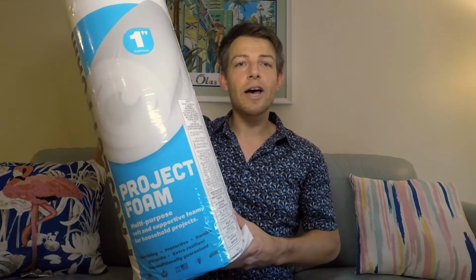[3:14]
I'm making a video today to tell you about an awesome project a group of us have been working on the past week or so in an effort to increase the personal protective equipment supply here in Broward County and South Florida. You may have heard on the news or seen on Facebook undoubtedly that there's a personal protective equipment shortage all across the nation and that masks and respirators are in high demand.
Well, in an effort to reduce the amount of respirators and masks that are being utilized, we've developed a do-it-yourself face shield. To tell you how this idea came to fruition, a friend named Amy, who is a medical student at George Washington University in Washington, D.C., has been doing this in response to D.C. and New York City's COVID fight. So thank you, Amy Tronier, for helping us get this project off the ground by providing us the instructions and the tips on how to improve assembly of these. We really appreciate your help.
I'd like to take a moment to express our gratitude to all of the donors and supporters from our GoFundMe page. You made a huge difference in making this project possible. And not only that, we're going to be able to get these products to the front lines to address the response when it's at its peak. Because of you, we were able to hit our $1,000 goal in just under 2 days, which is incredible, and we were overwhelmed with the support. Since then, we've sent out 8 do-it-yourself mask making kits. So we'll be able to be making these face shields from home starting this week. So it's very incredible. And so thank you to all of our donors and supporters out there.
After reaching out to various health organizations in Broward County, we identified this as a potential solution and a need for South Florida's COVID response. We'll be donating these to Broward Health Systems as well as the Broward Medical Response Unit. They serve as a repository for all personal protective equipment, and they distribute them to the first responders, hospitals and clinics, and nursing homes, anyone who has a bona fide need for this product. And it helps optimize the use to get them in the hands of who needs it the most.
These face shields are beneficial to users in that it allows them to see while giving them eye protection, as well as covering their respirator or mask that they're wearing, preventing contamination from COVID. This in turn increases the lifespan of that respirator or mask, which is in short supply. So it's really a win-win for the user and the personal protective equipment shortage.
You may be wondering to yourself, Sam, that face shield isn't going to last very long. Well, as an engineer, it's not designed to. It's designed to get involved in a time like this where you don't have access to more hardy pieces of equipment to protect yourself, but you do need something. So this does get the job done in that sort of situation.
And now the moment you probably all have been waiting for, I'm going to tell you a little bit about our DIY process on how to make these face shields using some foam, staples, laminated sheets, where you can turn all of that into one of our face shields. The first thing that you need is some foam. This can be purchased at Amazon, Joann's, Michael's, and it's 1 inch thick. So what this will serve as a cushion across the front of the face shield and provide a little bit of separation from the forehead of the wearer to their PPE they're wearing underneath.
The next item you're going to need to construct these is a plier stapler as well as the appropriate staples. Make sure they match. This will be helpful in securing the foam to the transparency film. The next item you'll need is 1 inch Coban tape. This will serve as the head strap for the face shield.
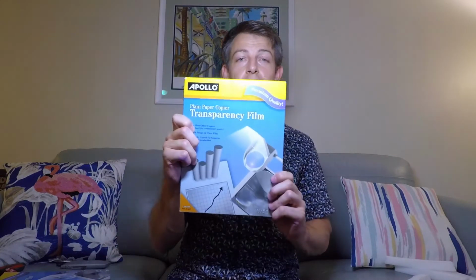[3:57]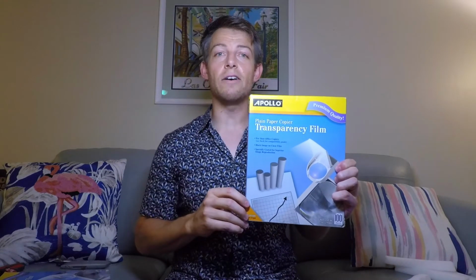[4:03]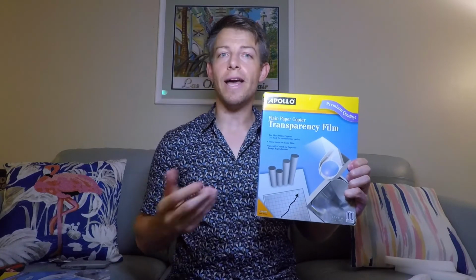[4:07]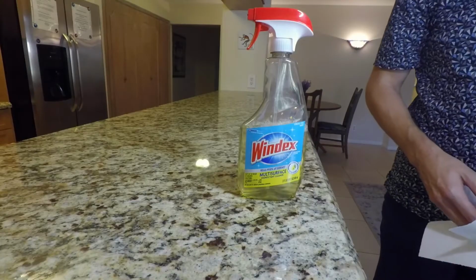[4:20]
Now, if you remember way back to your elementary school years, you may remember these transparency films. This is what your teacher used to write on with the overhead. This is going to serve as the face shield itself to protect the user. It's 8.5 by 11. You can buy it at Staples, Walmart, Office Depot. Pretty much any office supply store should have these. You can get the black and white or the color printing. We found the black and white to be the cheapest.
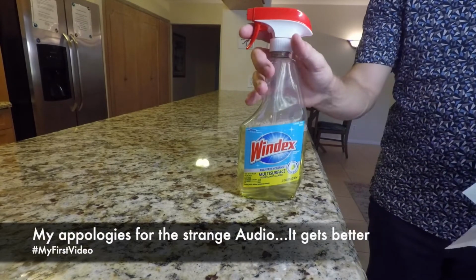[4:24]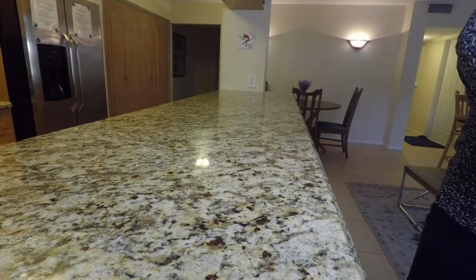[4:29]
So prior to starting measuring out the foam, we ask that you spray down your work area. That way you can reduce the contamination of this PPE.
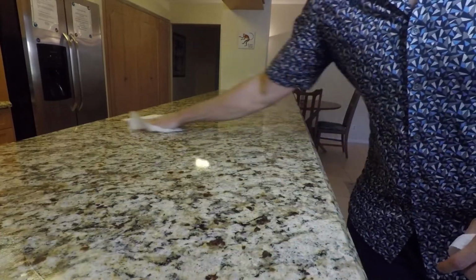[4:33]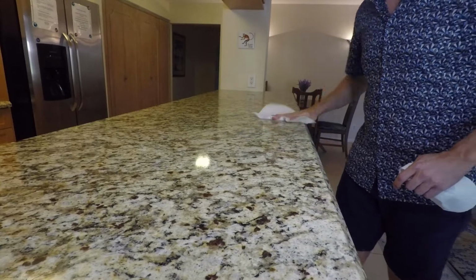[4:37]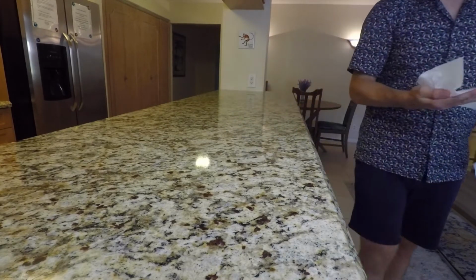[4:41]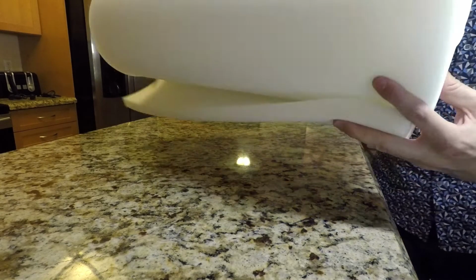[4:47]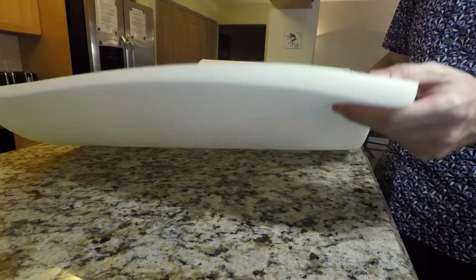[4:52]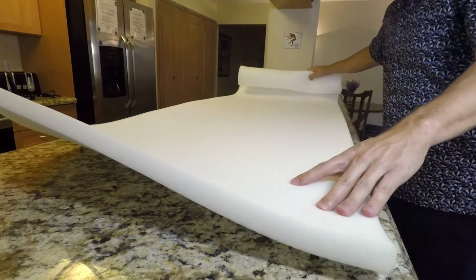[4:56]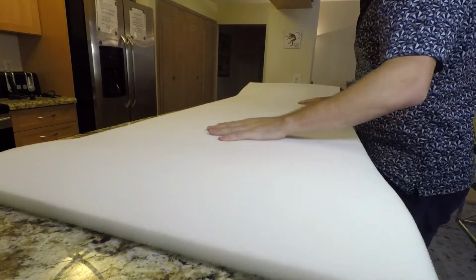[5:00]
Next, take out your foam and lay it out where you're free to measure it. Once again, this is a 1 inch thick by 24 inch wide by 72 inch long roll of foam. You may have to flip it so that way it doesn't roll up on you.
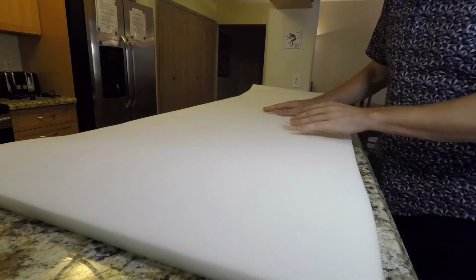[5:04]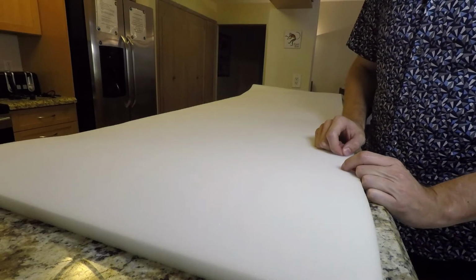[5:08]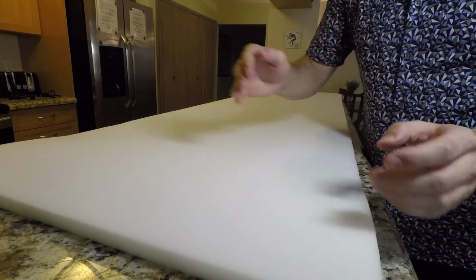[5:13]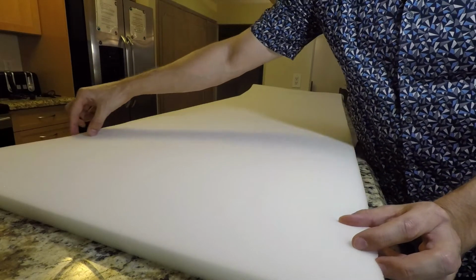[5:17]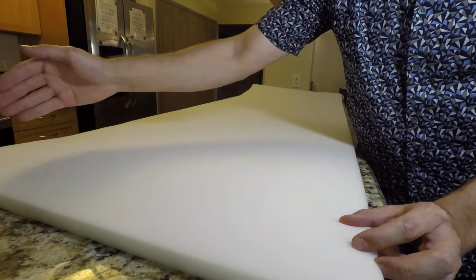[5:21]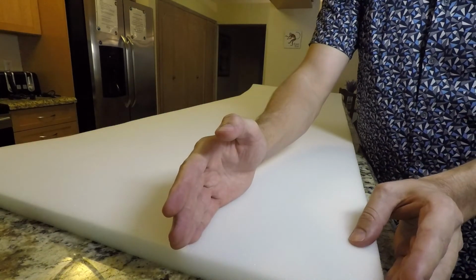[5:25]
Now it's important when you're cutting this that you always measure twice before you make one cut. So we've done a little bit of math and we found that with the 24-inch width, if you make your first line going all the way down about 1¼ inch, that way you'll have 3 different 7.5-inch.
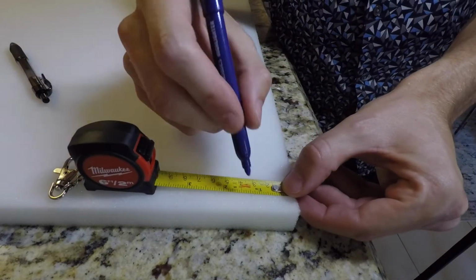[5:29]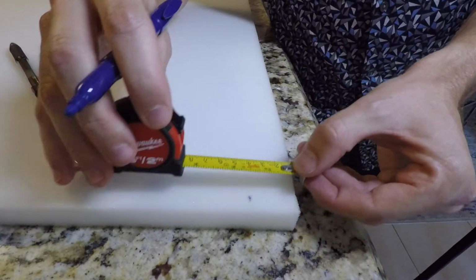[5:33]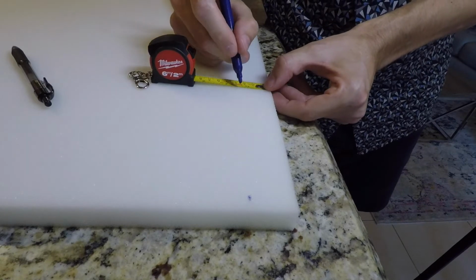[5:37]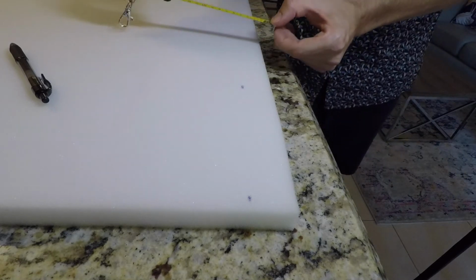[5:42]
So here we are at the edge and we're gonna measure 1¼ inches with a marker. And we're gonna do this a few times because this is gonna be the first cut that we make in order to make sure we're using this foam to the maximum effect. So once again, 1¼ inches, just a few times down.
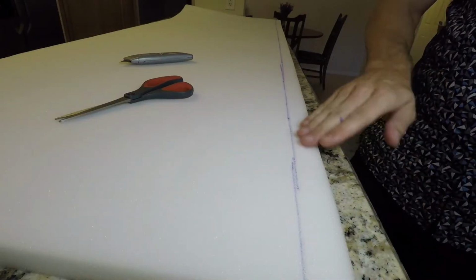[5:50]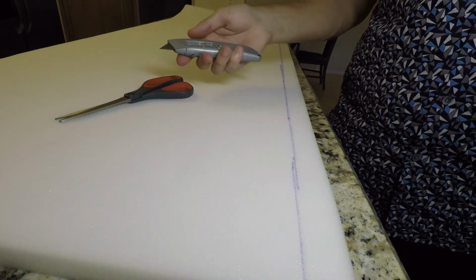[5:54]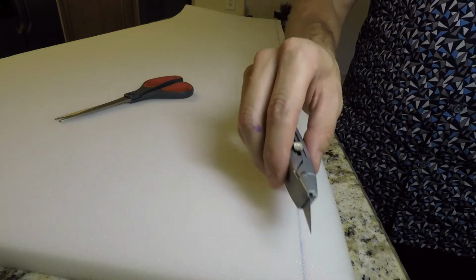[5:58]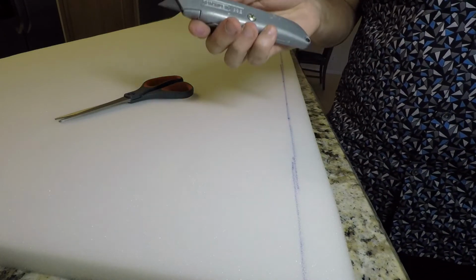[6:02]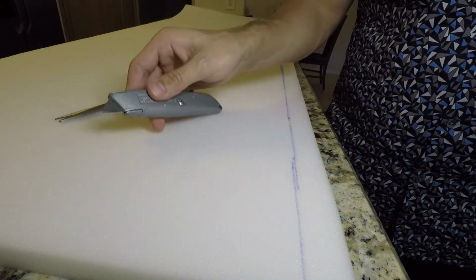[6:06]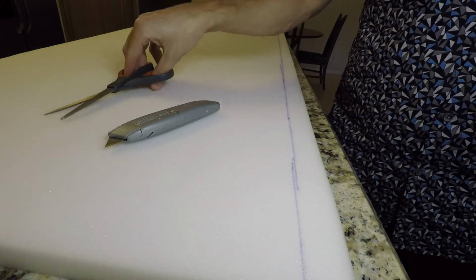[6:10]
Now that you've made the line going down this end of the foam, it's time to make your first cut. Using a box cutter or X-Acto blade, you can go down, make sure you're doing it on a hard surface. Do not do it on your grandmother's heirloom furniture. Your mother will thank me later for that. Or you can use scissors. It's a little more labor intensive, but it gets the job done nonetheless.
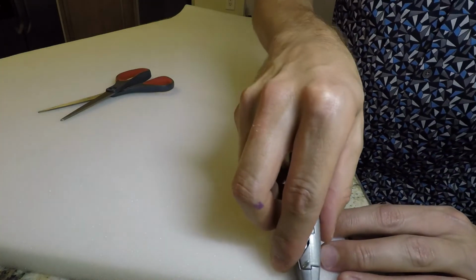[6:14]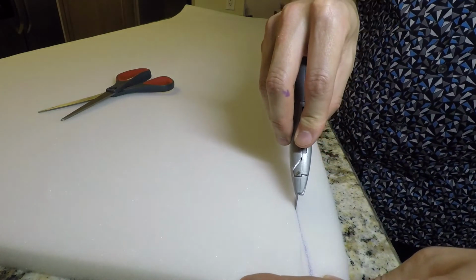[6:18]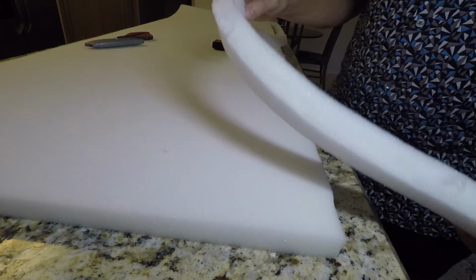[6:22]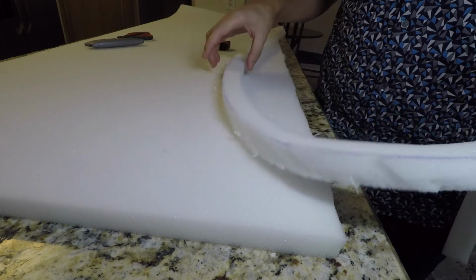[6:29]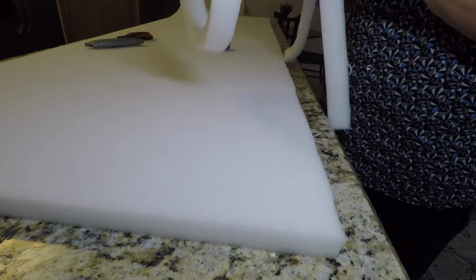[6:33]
Now that you've finished your cut, you've probably noticed there's a little bit of not as pretty lines, but that's okay. As we used to say in the military, it's going to be good enough for government. We're just stapling these to make the face shield. Don't throw this away. This is worth at least 10 face shields, so we don't want to get rid of it.
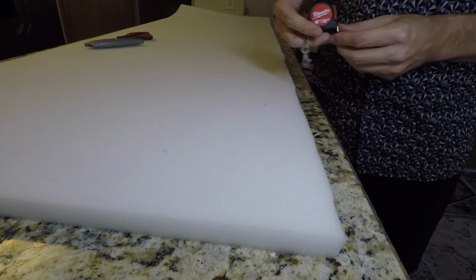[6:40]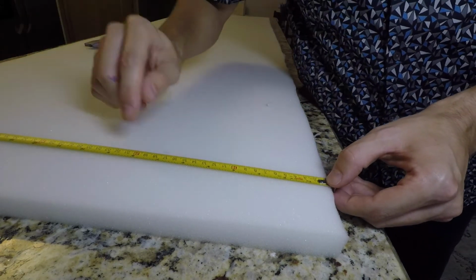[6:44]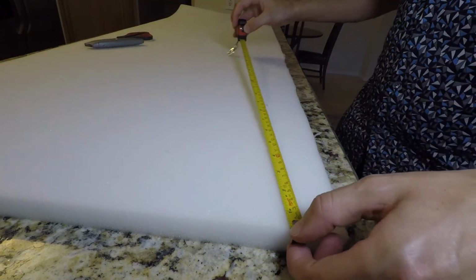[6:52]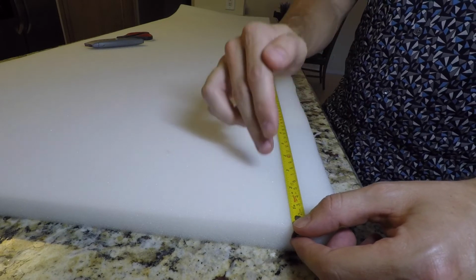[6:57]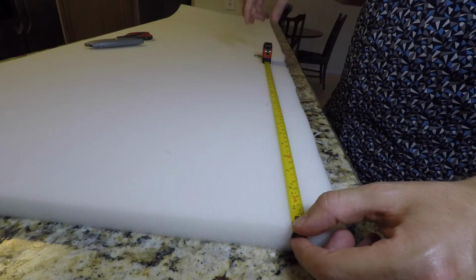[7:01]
The next step, we're going to measure across at 7 3/4, and this will make 3 equal parts of the remaining foam. After we've marked these, we're then going to go down the foam at 1 inch. At every inch, make a line. So this is going to be like a giant checkerboard, and then it'll be a little labor intensive.
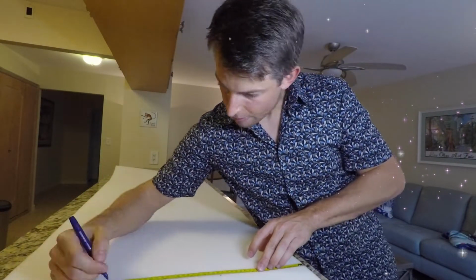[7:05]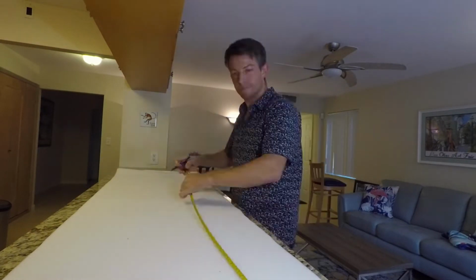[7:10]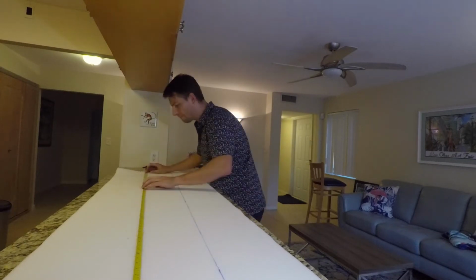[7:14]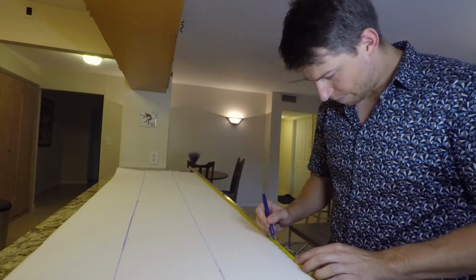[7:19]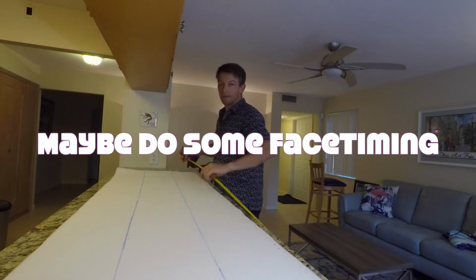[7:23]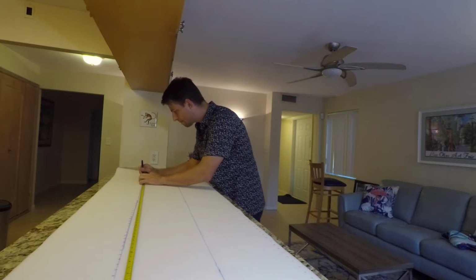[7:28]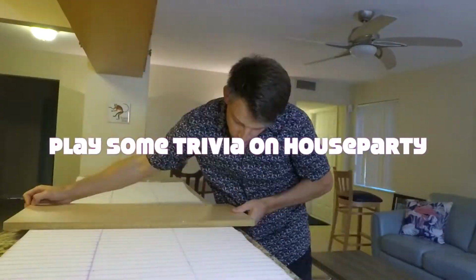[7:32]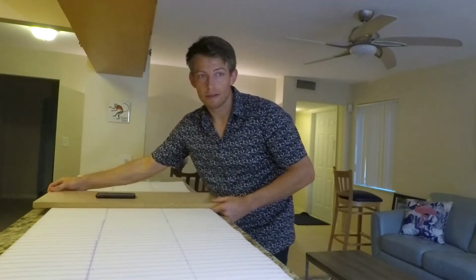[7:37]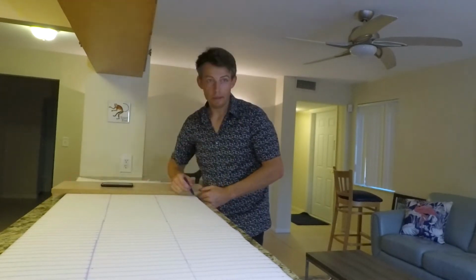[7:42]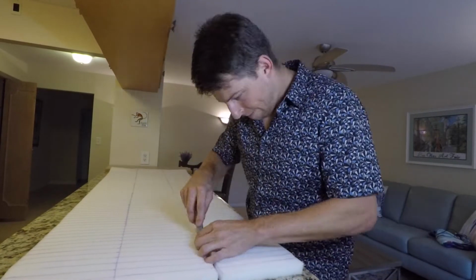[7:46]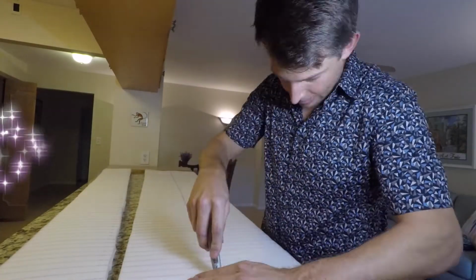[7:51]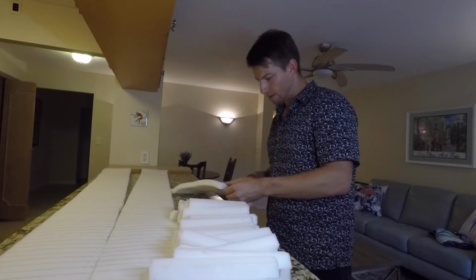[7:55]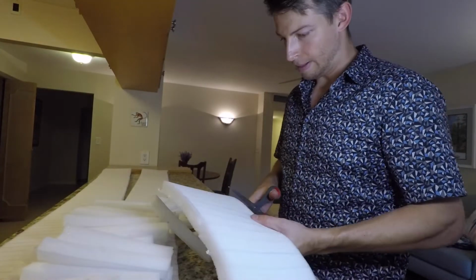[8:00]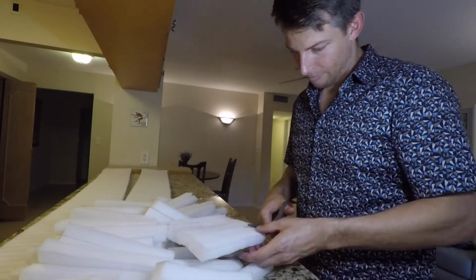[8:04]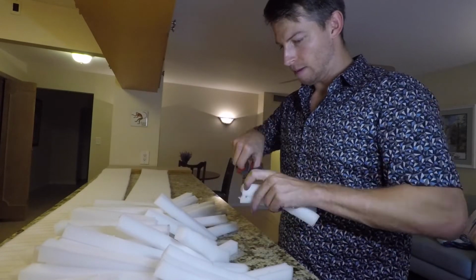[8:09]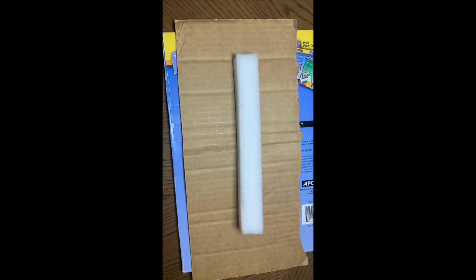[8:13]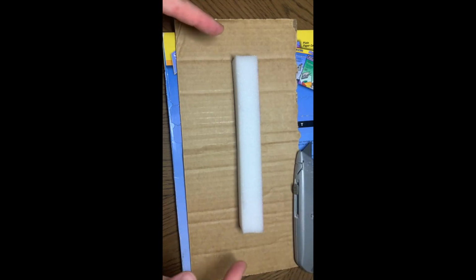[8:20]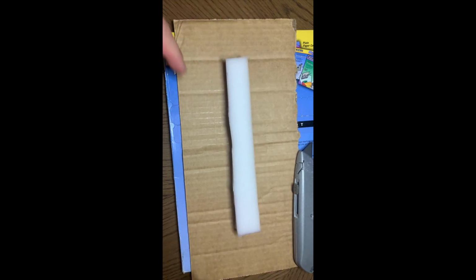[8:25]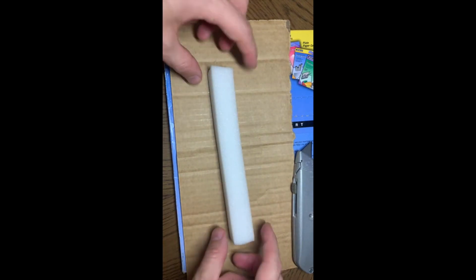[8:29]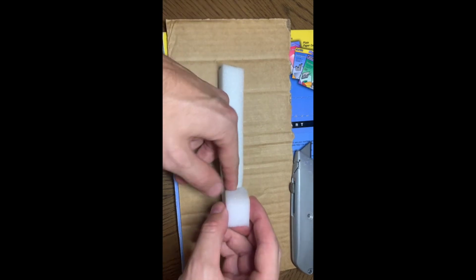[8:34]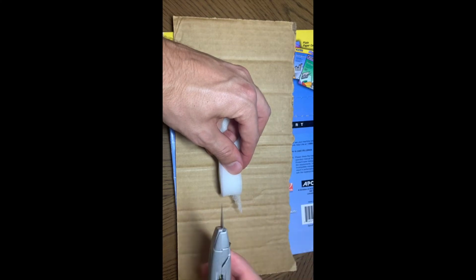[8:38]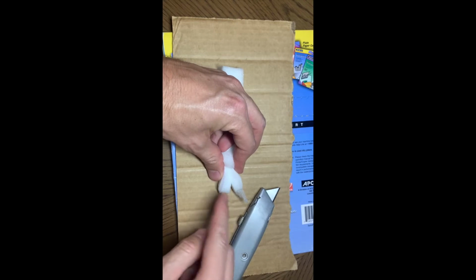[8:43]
All right, for the next step, we are going to be using the X-Acto blade to make 2 incisions on each piece of foam, about 1.5 inches in on each side. So if you look, you have your squiggly edge from where you cut and the factory edge. So with the factory edge going up and down on each side, fold about 1 inch in and take the X-Acto blade and push down and make a cut about midway through and all the way through the foam.
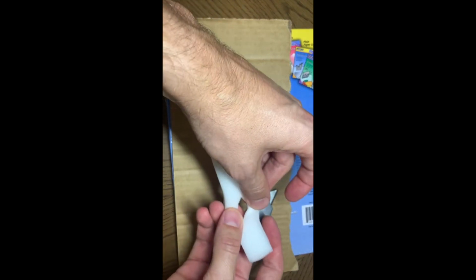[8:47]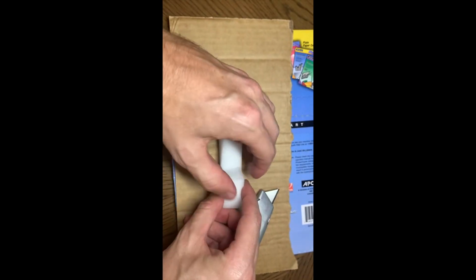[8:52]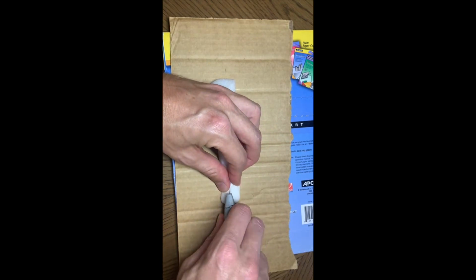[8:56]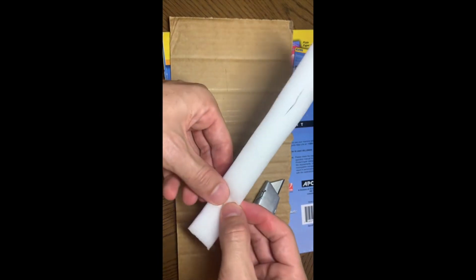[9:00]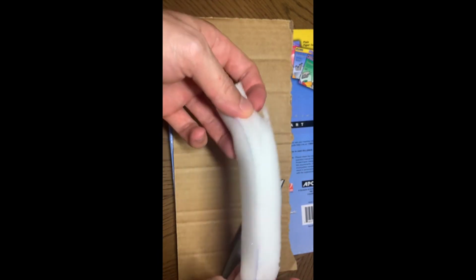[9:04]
This will allow the plier stapler to go through to attach to the transparent film. Flip over and repeat the same step on the side. Once again, do not use this on your grandmother's heirloom table. So now you can see you have 2 slits on each side midway through the foam.
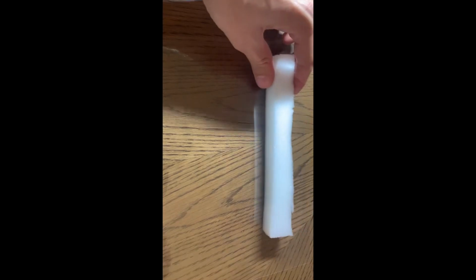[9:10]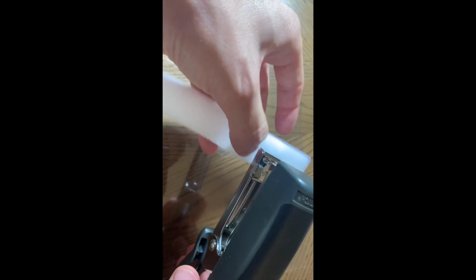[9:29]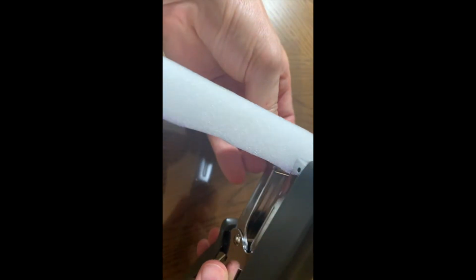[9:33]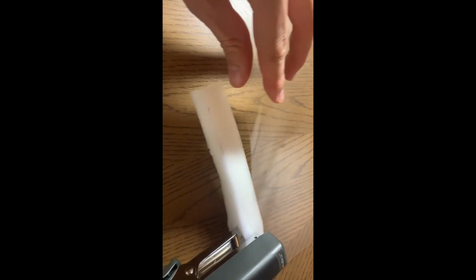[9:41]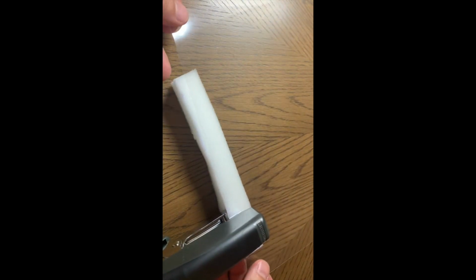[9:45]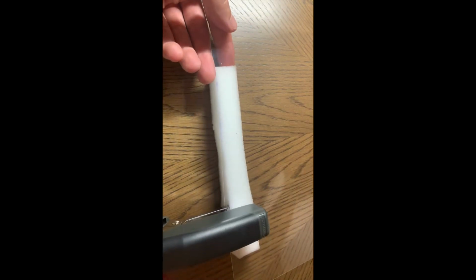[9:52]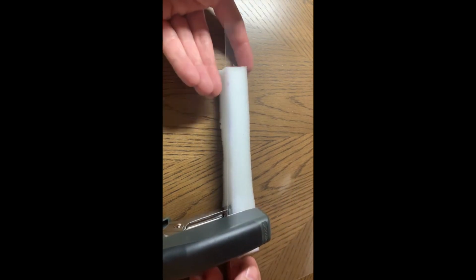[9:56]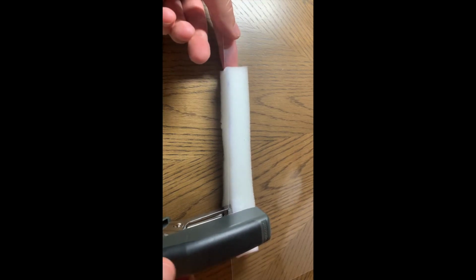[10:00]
With the foam that you just cut, go ahead and take a single piece of the 8.5 by 11 transparency film with the 11-inch side running across and weave the end of the plier stapler through the hole you cut so that it lines up about halfway through. Then using the 11-inch side of the transparency film, do your best to kind of center this piece of transparency film. It's easier to hold the foam at the bottom as you pull it across, and make one staple.
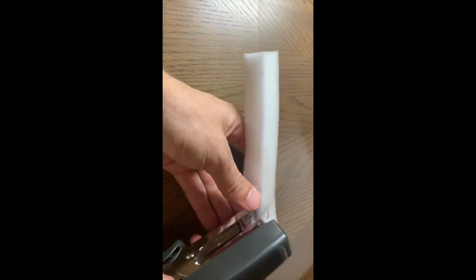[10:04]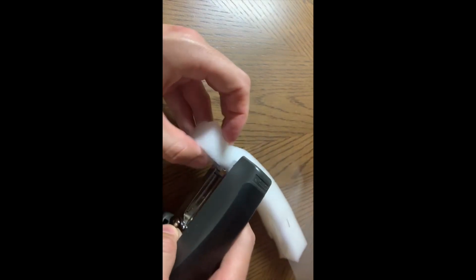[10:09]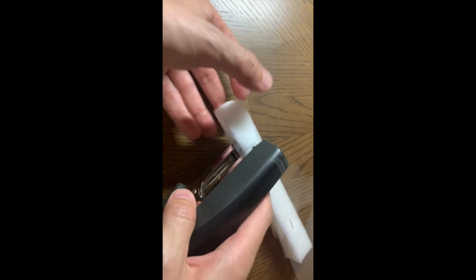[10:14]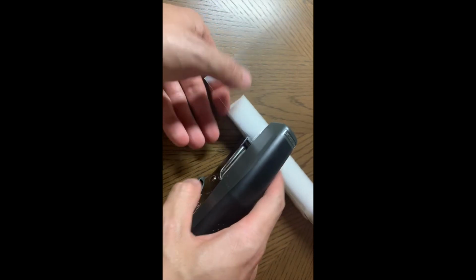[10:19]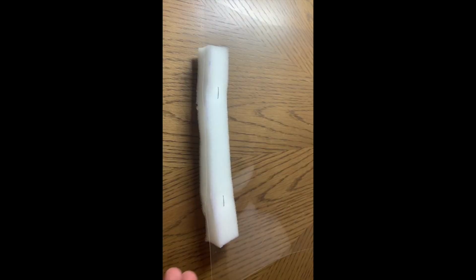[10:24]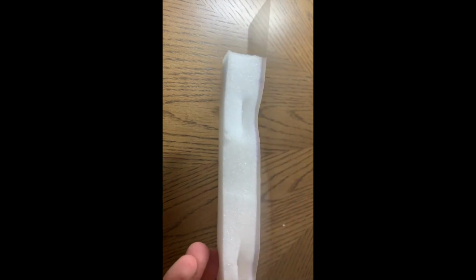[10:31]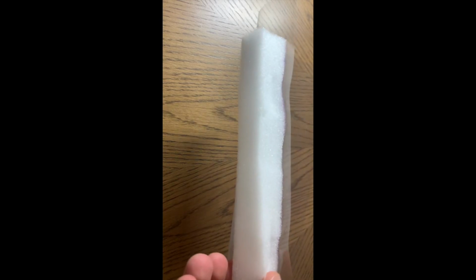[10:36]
Go ahead and put the plier stapler about halfway through again, the foam, and re-slide the piece of transparency film on top and do another staple. You should now have a single piece of transparency film with two staples attached to the foam. And notice how the factory edge is going to be against the user's face, which will increase the comfort of wearing this.
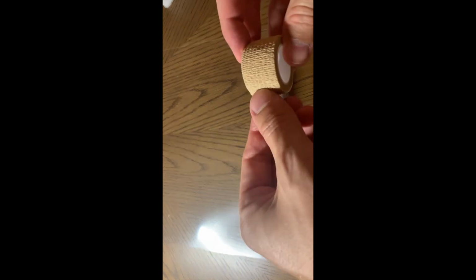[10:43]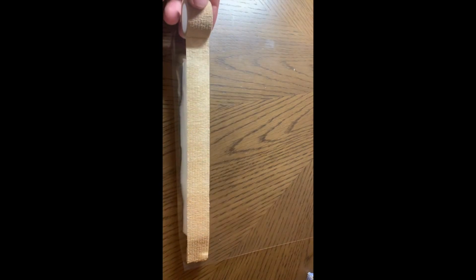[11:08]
Up next, you're going to take your Coban, this is again 1 inch, and fold the end in on itself. And on one end, you're going to take your plier stapler and make one staple and another staple in an X fashion, using about 10 inches of Coban. Do your best to kind of eyeball and then make an incision.
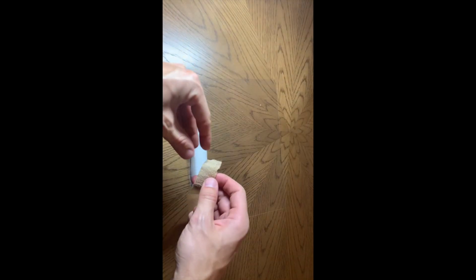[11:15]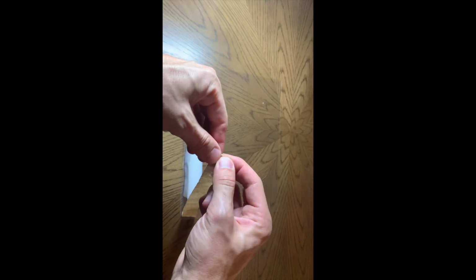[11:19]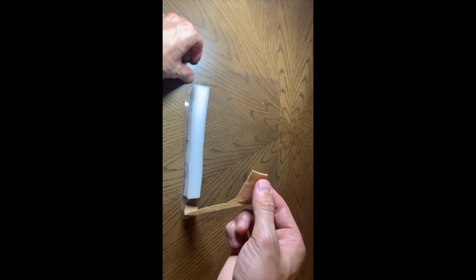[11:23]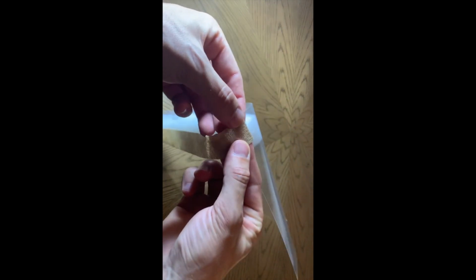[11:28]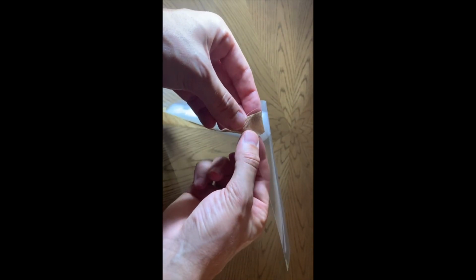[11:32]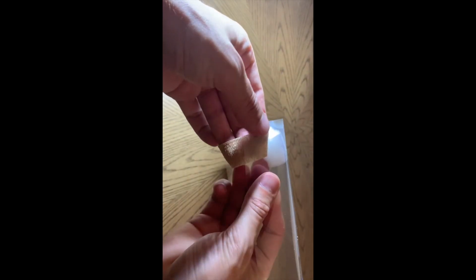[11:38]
And as we did on the other side, go ahead and fold a little bit of the edge over onto itself. And this is where it gets kind of tricky. You're going to take it over to the other side and put it on the inside. So you have transparency and the Coban underneath. You'll notice that the edges have started to bend around, and that's okay. It'll actually cover the sides of the user's face a little more robustly.
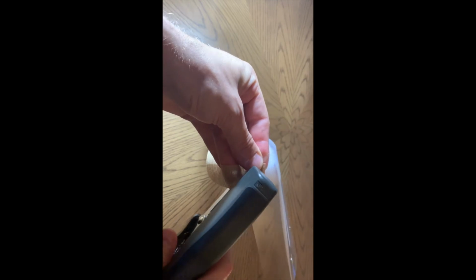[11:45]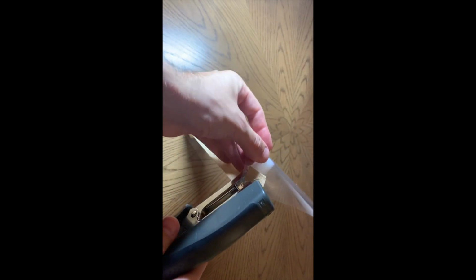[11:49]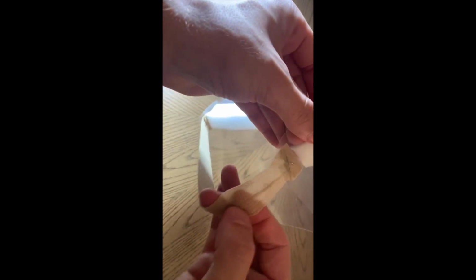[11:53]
And then carefully using that same X pattern, use one staple and two staples so that the Coban looks like that. And you now have your face shield.